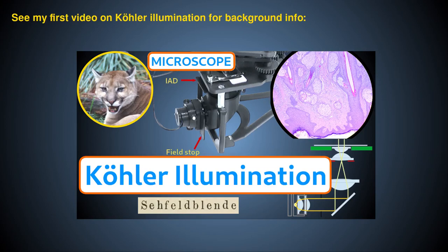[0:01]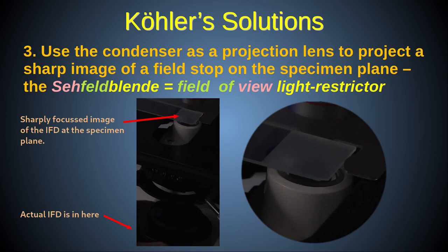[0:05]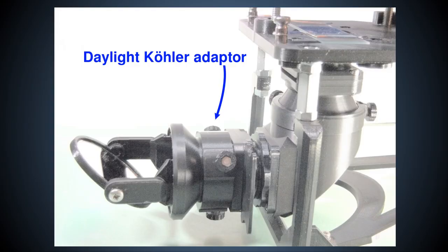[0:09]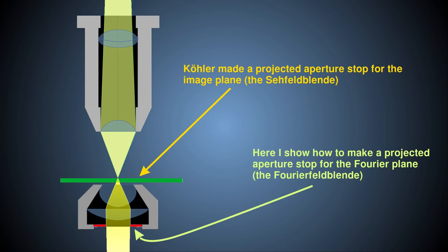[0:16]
In my previous video on Köhler illumination, I described Köhler's methods and his reasons for coming up with them. In this video, I'll show you how you can power the PUMA Köhler illuminator with daylight, and I'll describe an extension to Köhler illumination, which I call the Fourierfeldblende, that enables some advanced aperture shaping techniques.
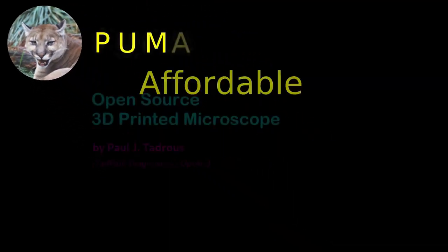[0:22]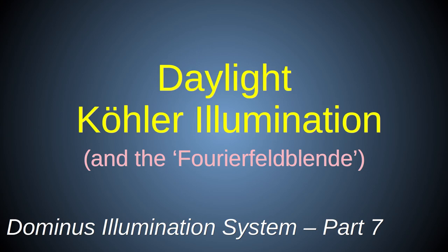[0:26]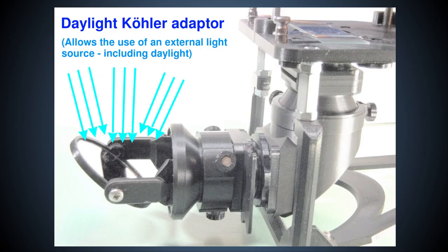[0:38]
Imagine if you could have all the benefits of full Köhler illumination, but without the need for a lamp or a power supply. Well, today I'll show you a new PUMA module that allows just that. But there's more to it. The same attachment can allow the use of any plain wavefront external light source to enhance PUMA's customizability for use in lab experiments, including a logical extension to the Köhler principle for controlling the Fourier aperture of the scope.
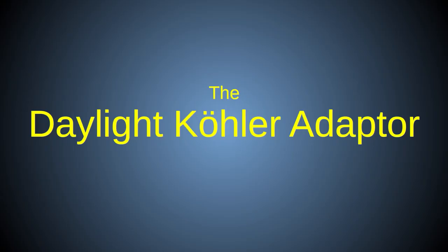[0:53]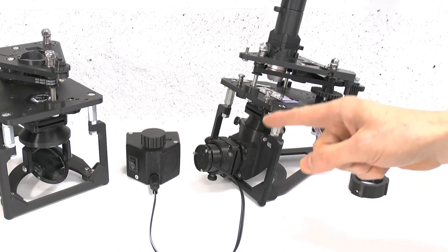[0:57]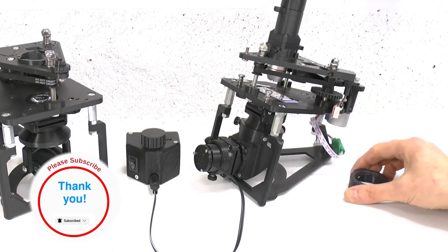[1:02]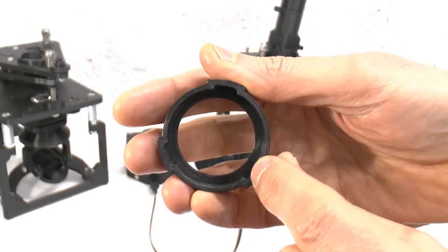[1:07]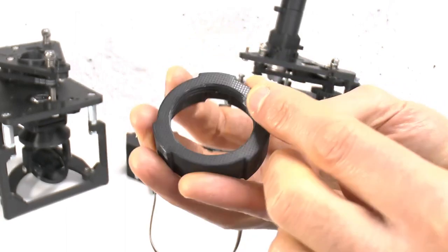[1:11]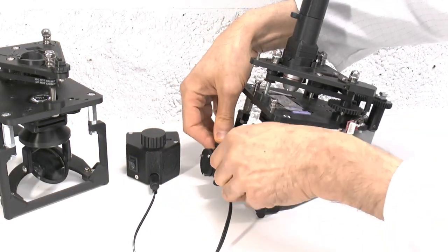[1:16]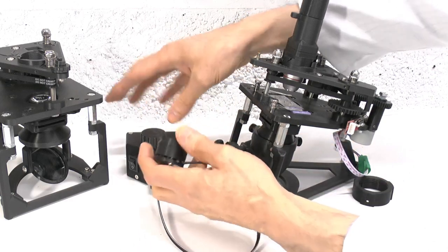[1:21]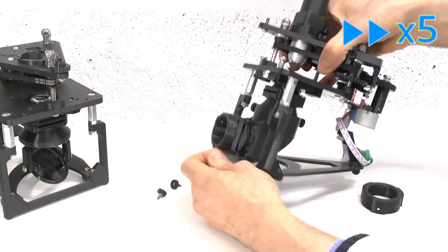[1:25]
If you've already built the PUMA Köhler illuminator, fear not, because everything you've made is still useful. The new part I'm describing today is just this simple small ring, and you can see it has these three cavities at one end and a thread at the other. So, to use this adapter, starting with the full Köhler illuminator, you simply remove the LED lamp and lower collector module together with its adjustment ring by completely removing the three adjustment thumb screws as shown.
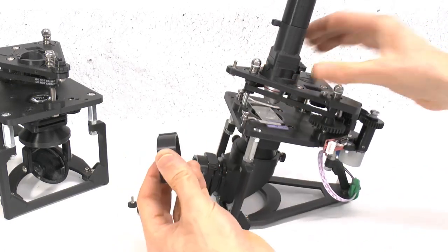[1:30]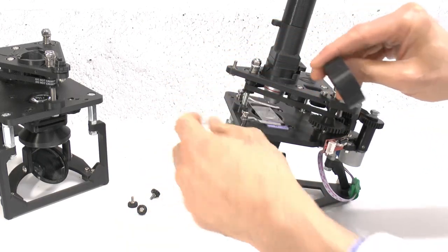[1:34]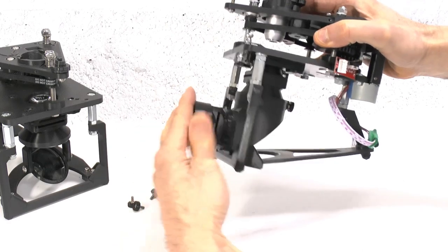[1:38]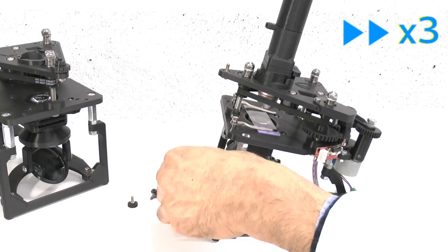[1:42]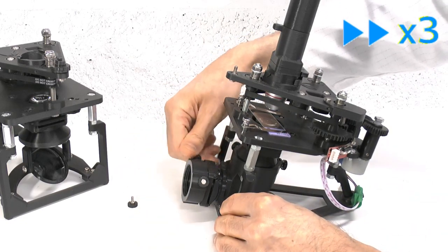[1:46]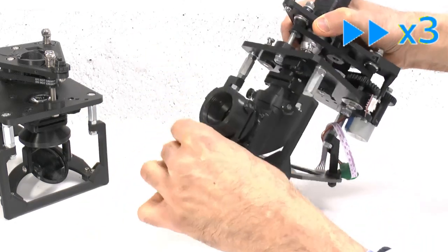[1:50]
Now, slide the daylight adapter into the end of the Köhler illuminator, ensuring the cavities in the adapter line up with the adjustment screw mounts, like so, and fix it in place with the adjustment thumb screws, as shown. You won't be using these thumb screws for making angular adjustments now, they're solely used to hold this adapter in place.
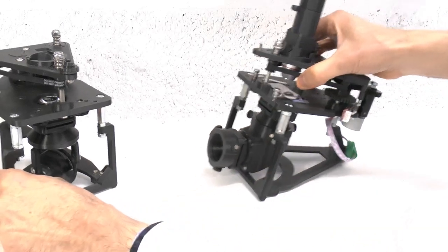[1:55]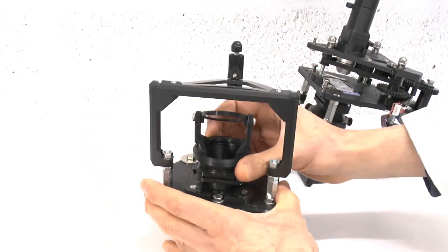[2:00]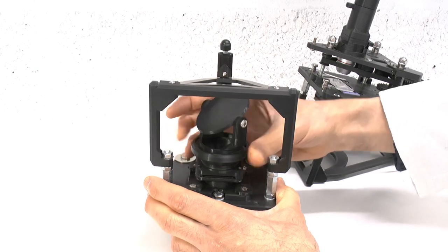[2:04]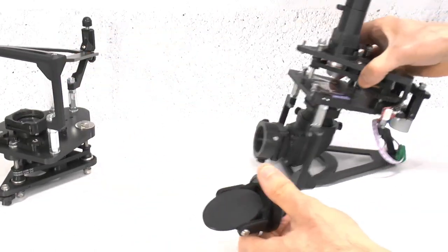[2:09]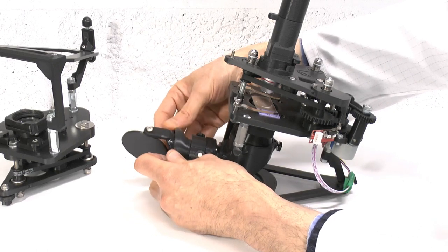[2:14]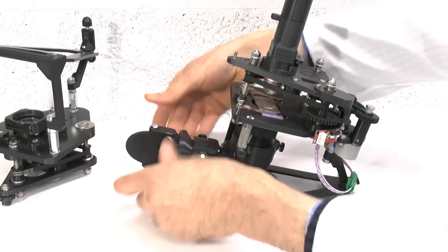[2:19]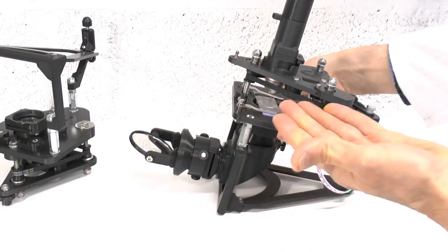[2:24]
Now take the standard PUMA mirror illuminator with its condenser attachment. These modules were described in the video on how to build a foundation scope and in the first condenser video, links to which are in the video description below. You then simply screw the whole mirror assembly into the thread provided by the daylight Köhler adapter, like so. And now you have an adjustable mirror to direct an external source of light into the Köhler illuminator. It's as easy as that. However, not any old light source will be suitable.
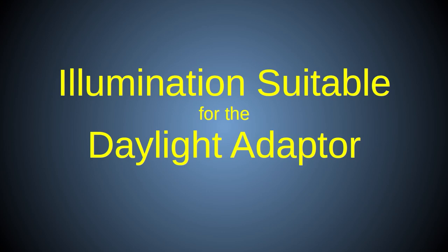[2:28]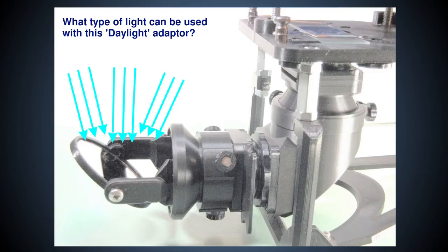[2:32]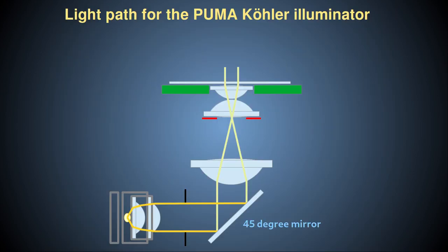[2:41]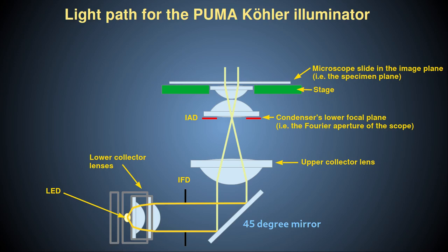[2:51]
So, what type of light source can be used with this adapter? You may think that the clue is in the name. However, it's important to consider the light path of the PUMA Köhler system to understand why you must be careful when selecting the type of external illumination to use, whether it's from natural daylight or an artificial source. The PUMA Köhler illuminator is designed with a split collector lens system, where the lower part of the collector is attached to the lamp and is designed to output an approximately collimated plane wavefront beam. And the upper collector lens is designed to focus that collimated beam on the lower focal plane of the condenser to produce a magnified image of the lamp there.
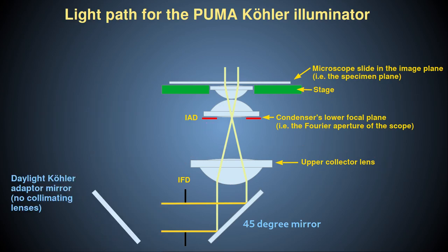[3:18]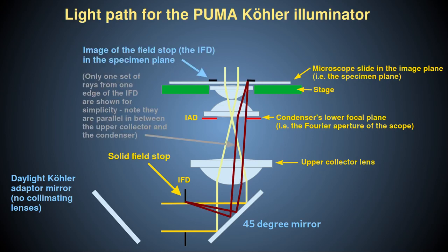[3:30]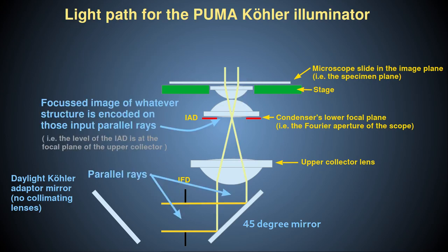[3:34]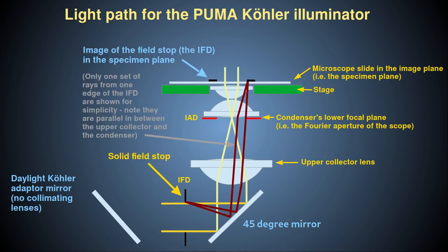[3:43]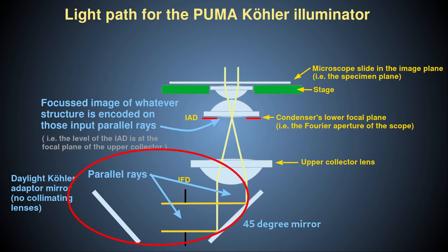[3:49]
With this daylight adapter, you've removed the lower collector lenses with the lamp and replaced them with a mirror. The upper collector is still in place, however. This upper collector does two things. One, together with the condenser lenses, it focuses the image of the field stop onto the specimen plane. And two, on its own, it focuses the incoming parallel rays onto the lower focal plane of the condenser to produce a magnified image of the light source there. The first effect, imaging the field stop, will occur regardless of the nature of the input light. The second effect, however, requires that the input light be collimated and encode an image of an extended light source. This image, when focused by the upper collector lens, will be positioned at and ideally fill the lower focal plane of the condenser for maximum numerical aperture illumination.
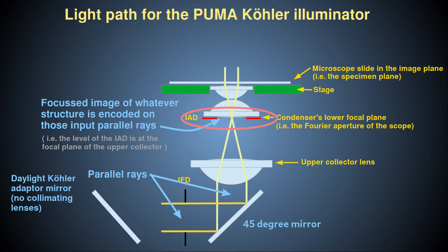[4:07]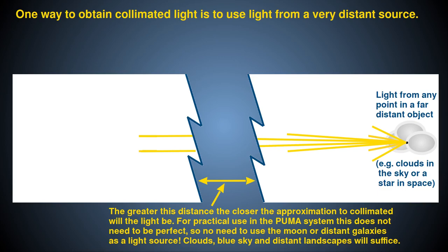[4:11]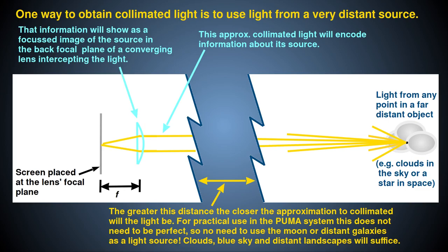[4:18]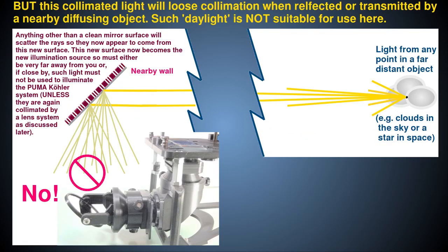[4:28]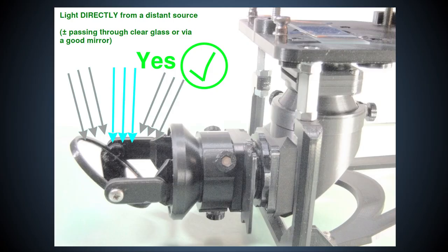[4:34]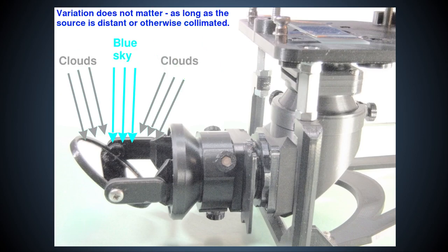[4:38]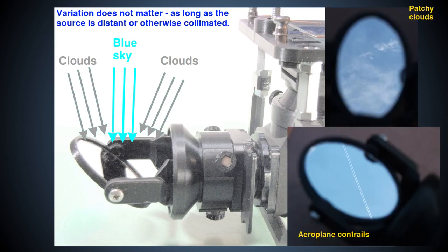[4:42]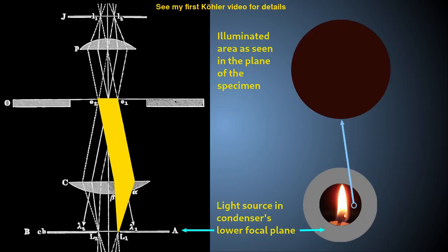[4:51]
So, in practice, when using daylight as the illumination source, this daylight must originate from a faraway source, like the clouds and the blue sky, or light reflecting off a distant landscape, in order for it to be approximately collimated. You can't just use ambient daylight reflecting from any close source, for example within a room reflecting off a white wall, a curtain, or some other close diffusing object. When using natural daylight in the correct way, it doesn't matter for most ordinary uses of the microscope if the light contains some variation in brightness across the field, such as a combination of clouds and blue sky, or the features of some faraway landscape, because the Köhler principle will even out this illumination in the specimen plane.
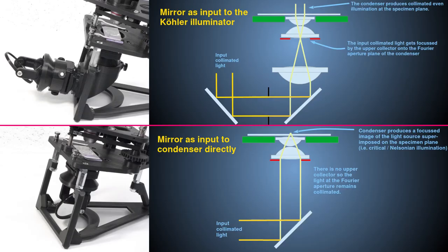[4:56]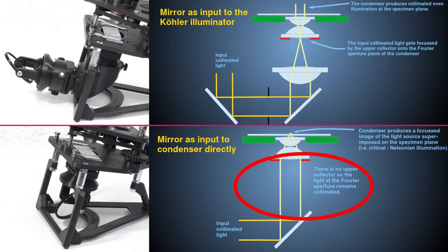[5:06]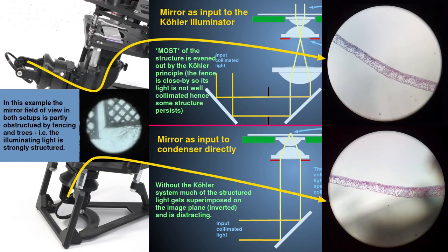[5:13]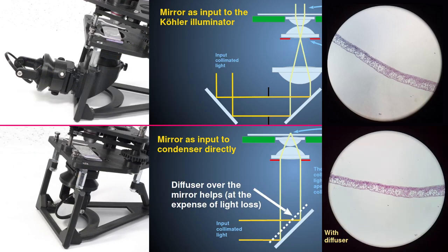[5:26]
This is very different to using the mirror as a direct illuminator to the condenser, because in that situation the collimated rays will not pass through the upper collector but will hit the condenser directly and be focused by the condenser to form an image of the light source near the specimen plane. This can manifest as distracting, uneven illumination, and so in that usage it would be beneficial to use an already uniform light source, such as a full cloudy sky, or a full blue sky, or even use a diffuser over the mirror, or better still, in the lower focal plane of the condenser.
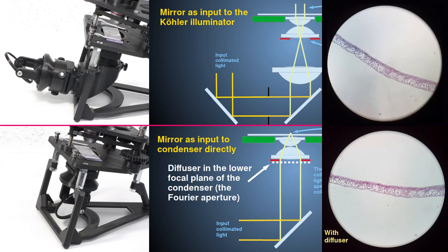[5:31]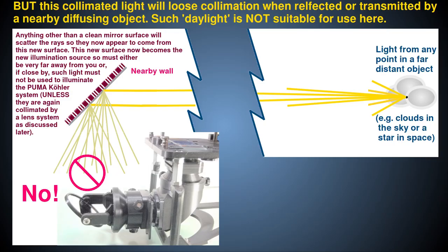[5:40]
However, you must not use a diffuser near the mirror with the daylight Köhler adaptor, because then you will scramble the plane wavefront of any incoming collimated light, and the image of the diffuser surface will lie close to the specimen plane, and so be visible superimposed on the image of the specimen. This is just the kind of distracting artifact that Köhler illumination was designed to eliminate.
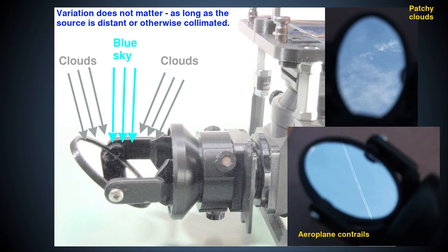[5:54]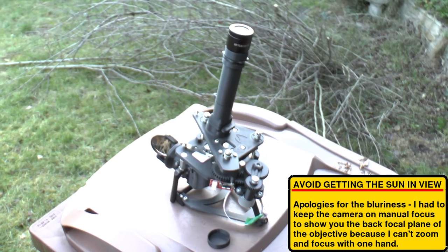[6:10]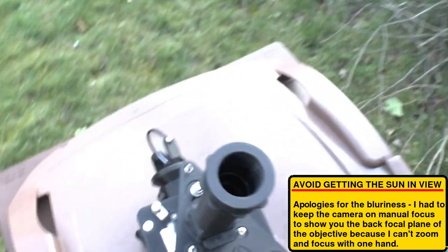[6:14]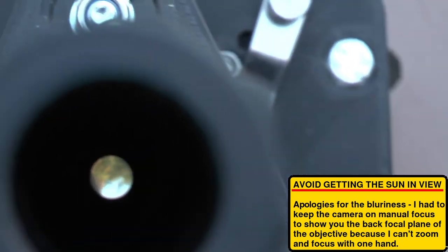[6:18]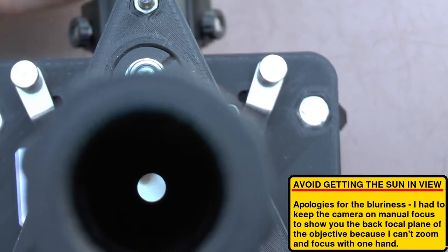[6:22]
Now, I've explained that some variation in the intensity of the daylight used with this daylight adaptor is acceptable. However, you'll want to ensure that all the aperture is illuminated and not blocked off by severe light obstructions, such as trees or buildings or window frames, etc. You can check this is so by simply removing the eyepiece and looking at the back focal plane of the objective. If you see significant obstructions to the pattern of the illuminated disc, then move the scope or the mirror to a less obstructed position.
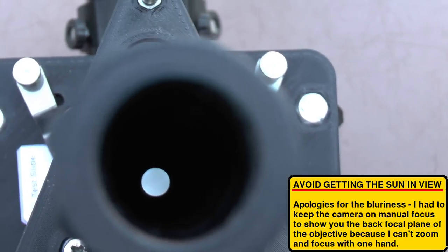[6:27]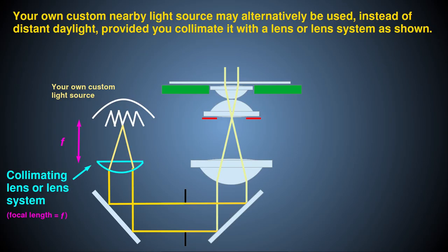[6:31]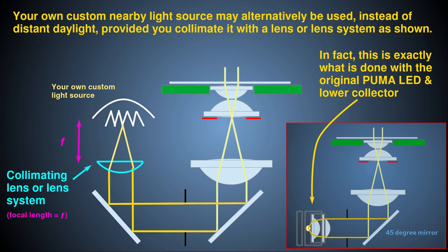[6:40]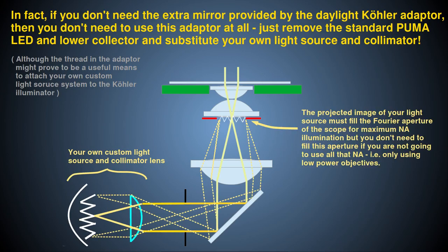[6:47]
Be careful, however, not to get a direct reflection of the sun in the mirror at any time, or this could damage your eyesight. If you want to use an external artificial light source with this new illumination module, then that light must also be effectively collimated and encode an image of an extended luminous surface, that when this image is focused onto the lower focal plane of the condenser, it will fill this plane to allow use of the maximum numerical aperture of illumination provided by the condenser. Although, if you only intend to use low-power objectives, you can relax this criterion.
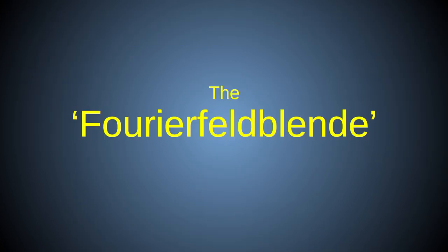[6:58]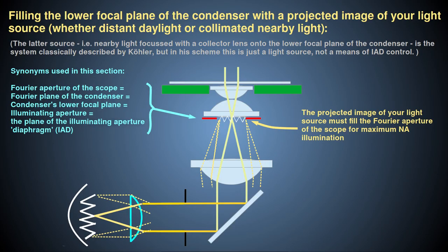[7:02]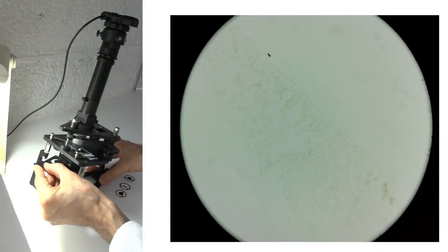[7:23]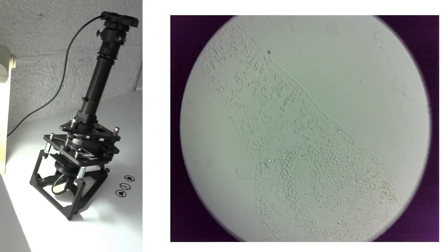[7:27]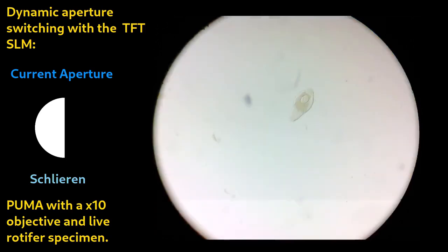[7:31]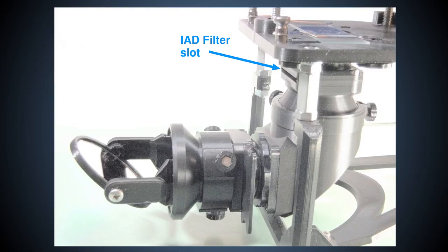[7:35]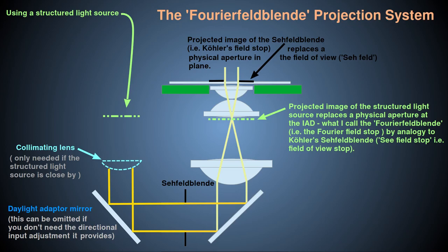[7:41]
The illumination criteria discussed so far are those that are needed for plain full-aperture illumination. However, there may be instances where you do not want the full aperture of the condenser to be illuminated. Some obvious examples are when you want to do Schlieren phase imaging or dark ground microscopy. This daylight module opens up new opportunities on how to achieve this. The standard way to shape the condenser's lower focal plane is with a solid filter or the spatial light modulator, or SLM, in the illuminating aperture diaphragm slot, or IAD slot, and you can still do it that way with this daylight module. However, this daylight module makes it practical to shape the condenser aperture by using structured light encoded in the collimated input beam, without the need for a solid filter in the lower focal plane of the condenser.
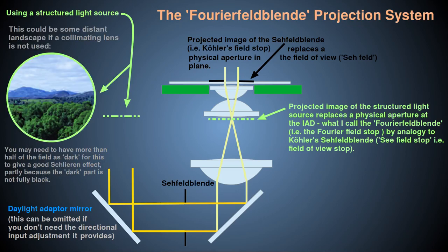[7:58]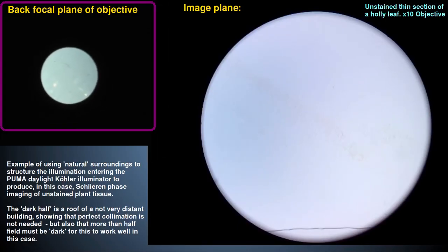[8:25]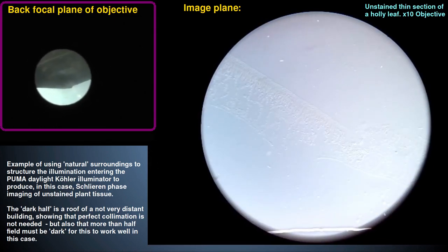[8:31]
This sounds complicated, but it can actually be very easily achieved without additional apparatus. For example, if you're using natural daylight, you can achieve a Schlieren effect by looking for a natural distant horizon between the sky and the ground. You then remove the eyepiece and look down the tube at the back focal plane of the objective and adjust the mirror or microscope position to get the boundary between light and dark positioned so as to fill half the illuminating aperture with light, that is the sky, and the other half with dark, that is the ground, trees, etc. Then, when you replace the eyepiece, you will see a Schlieren effect. This example may be handy if you've forgotten to bring your IAD filters with you out in the field, but it is not otherwise particularly useful.
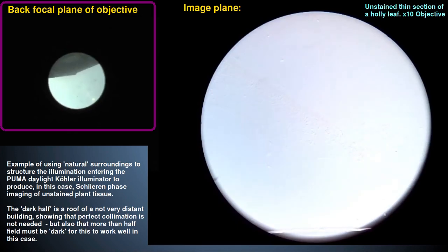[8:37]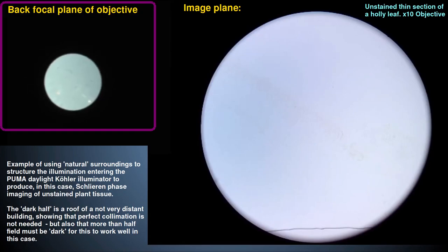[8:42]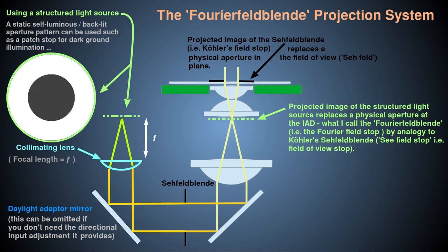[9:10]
The real benefit of this method of shaping the illuminating aperture comes when using an artificial light source in the laboratory. You see, you can set up a system with a structured light source at the focal plane of a converging lens. The converging lens therefore collimates the image of this shaped light source to provide input to the daylight Köhler system, which will then project an image of that structured light source on the condenser's lower focal plane. The structure of that light source will then form the illuminating aperture of the microscope. In simple cases, this can be a patch stop or semi-disc for dark ground or Schlieren effects, respectively.
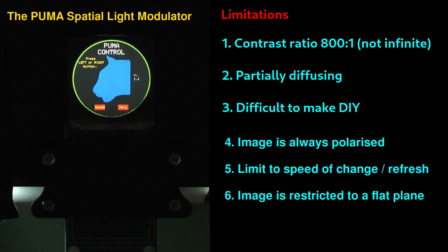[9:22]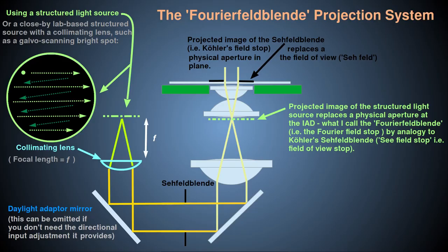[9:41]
But it can also be much more complicated, such as a fast scanning spot for Fourier ptychographic imaging. The PUMA TFT SLM can also allow versatile control of this Fourier aperture, but it has several limitations that were described in the video on the SLM. For example, because the SLM uses a TFT screen, it cuts out a lot of the incident light due to its crossed polarizers, and it always transmits plane polarized light, whereas a light source in this external system using the daylight Köhler adapter will have minimal losses in intensity and does not need to be polarized.
Also, the SLM is partly diffusing, so cannot allow a sharp image of the field stop to be projected, but this external system can make full use of the field stop. Furthermore, you can also use corrective lens elements in this external system to compensate for the non-flat Fourier plane of the condenser, whereas the SLM is restricted to providing its filter all in one flat plane. In short, you have much more flexibility in your choice of equipment used to create the structured light aperture in the Fourier plane with this external system compared to the PUMA SLM.
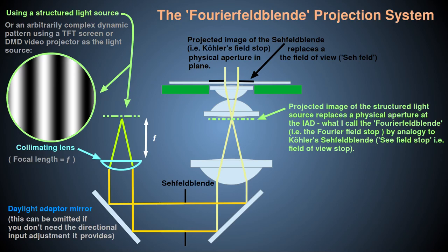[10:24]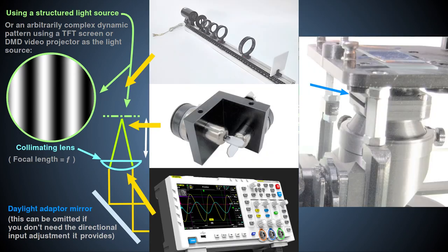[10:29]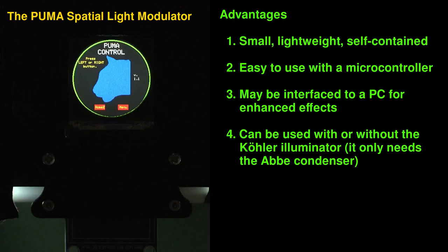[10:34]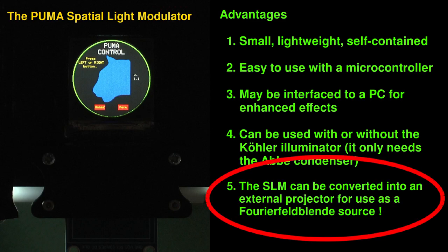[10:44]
The external system can be big and bulky and powerful because it does not have to physically fit into the tiny IAD slot like the PUMA SLM. These advantages are not all one way though. The PUMA SLM is a lot more portable than the external projection system and does not require any additional optics and mechanical components. Finally, the SLM can itself be transformed into a projector by adding a powerful backlight and converging collimating lens, so it can actually be used as an external structured light source for projection. I'll leave details of how to do this for another video.
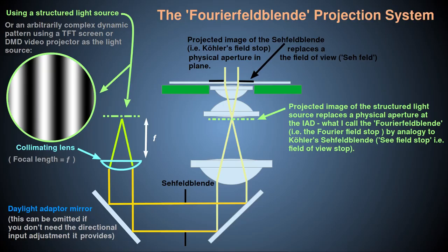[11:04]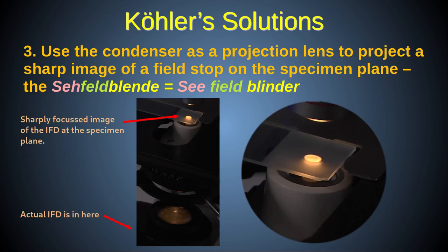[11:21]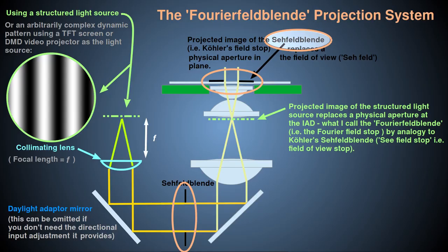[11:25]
Now, when you think about it, this external structured illuminator projection system is a very similar method for control of the condenser's lower focal plane aperture, i.e. the Fourier aperture of the scope, to the projection method Köhler devised to control the image plane aperture. So, just as Köhler called his image plane projected aperture the Sehfeldblende, so we could call this optical projection system for defining the condenser's Fourier plane illumination aperture a Fourierfeldblende.
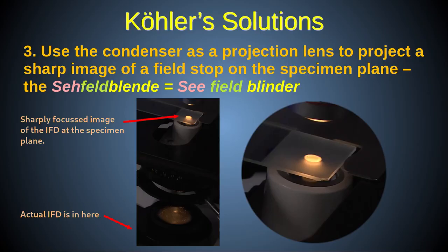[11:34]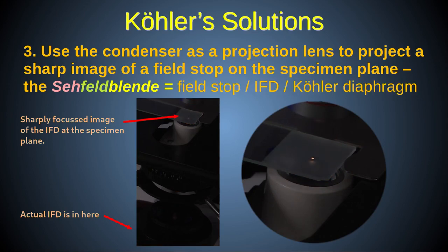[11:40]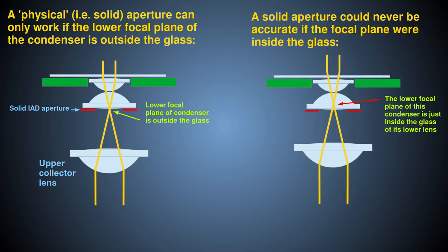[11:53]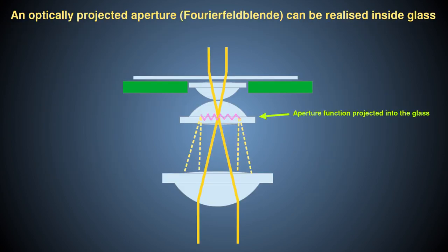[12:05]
Also, just as Köhler made his projected aperture so that he could put it inside the solid glass slide to be coplanar with the specimen, so also this Fourierfeldblende can be projected into the glass of the condenser lens. This may be required because with some configurations of the condenser, I have found that the optimal lower focal plane can be just inside the glass of the lower condenser lens. No physical stop can be optimized for that, but this external projected aperture can be placed even inside solid glass if required. This is done by varying the distance between the upper collector and the lower lens of the condenser using the spacer ring mechanism described in my first Köhler video.
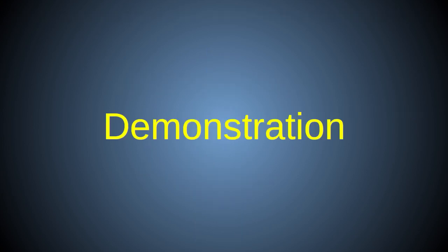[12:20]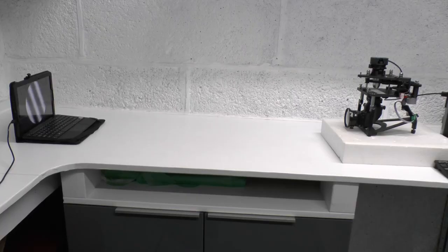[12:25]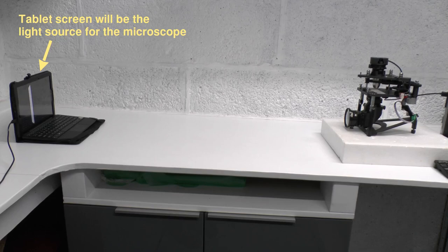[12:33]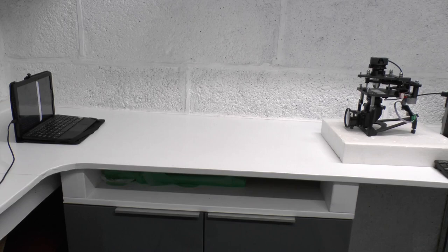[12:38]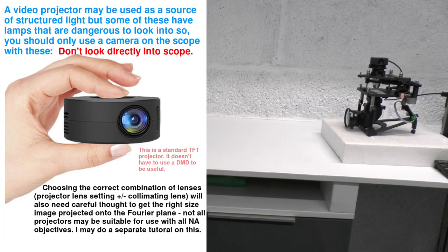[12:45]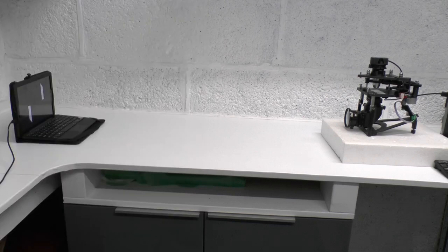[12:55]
To demonstrate this external structured aperture projection system, I've set up this simple apparatus. Here, the light source is the screen of this tablet computer, and you can see some aperture functions displayed on it. This level of illumination is sufficient for this demo, but more powerful light sources would be used in practice, like a DMD video projector. However, you should not look down the microscope by eye if using a video projector, because some of the light sources they use can be damaging to your eyesight, so only use cameras with those.
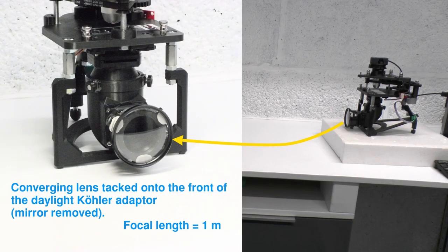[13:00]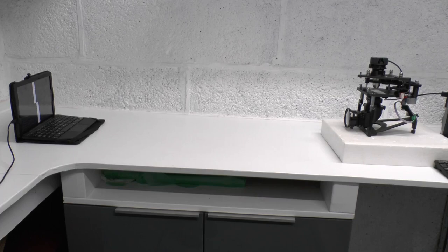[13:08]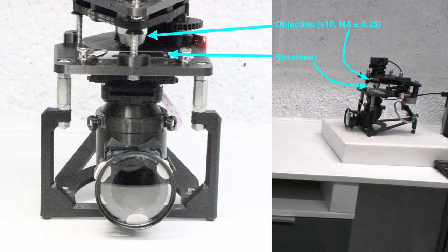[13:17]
I've removed the mirror from the daylight Köhler attachment and stuck a collimating lens on the front of it with blue tack. This lens has a focal length of 1 meter. So the tablet screen is placed exactly 1 meter away, so that its light is collimated as it enters the scope. I have a slide on the stage with a specimen that is a thin section of an unstained holly leaf, so most of any contrast seen will be of the phase or scattering type, rather than absorbance contrast.
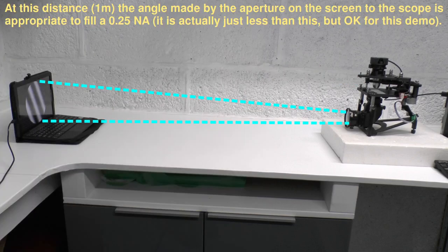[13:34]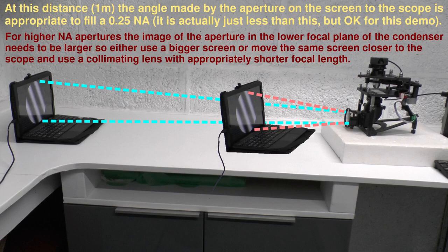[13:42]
The objective is a ×10 objective with a numerical aperture of 0.25, and I chose the collimating lens and its focal length such that the projected image of this tablet screen just fills the numerical aperture of this objective. If I were using a higher numerical aperture objective, I would need to bring the tablet closer to get a bigger image of its screen, and so I would also need to reduce the focal length of the collimating lens accordingly.
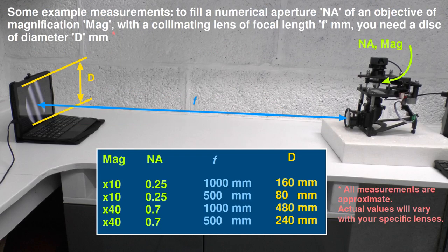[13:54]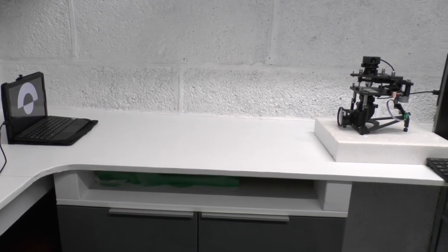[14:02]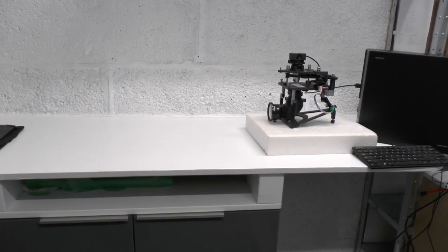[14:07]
Bear that calculation in mind if you want to try this experiment at home with a smaller screen like your smartphone or a bigger desktop monitor. On top, we have an AF51 camera with a direct coupling to the objective. The camera is focused on the back focal plane of the objective. I'll show you how to do that in a separate tutorial.
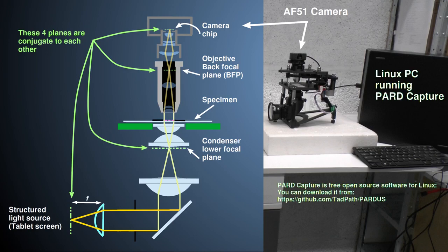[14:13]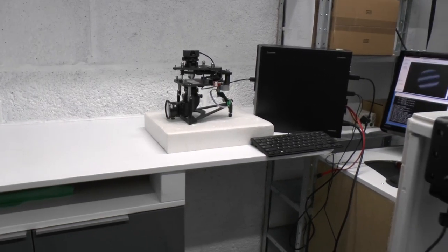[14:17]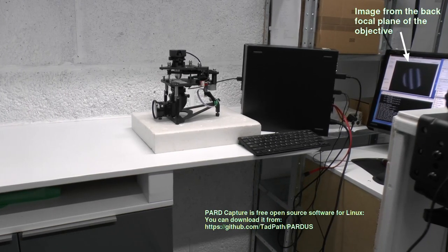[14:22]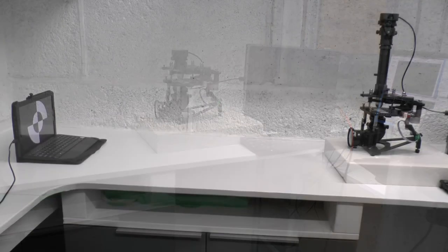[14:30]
The camera is connected to this PC, which is recording the image, and you can see how the image in the back focal plane of the objective effectively mirrors that of the input structured light aperture. We also want to see what the image of the specimen looks like with these apertures, so for a separate run of the experiment, I set up the camera on top of an eyepiece with the full optical tube in place. During the actual experiments, I turn out the room lights to avoid unnecessary light contamination from the environment.
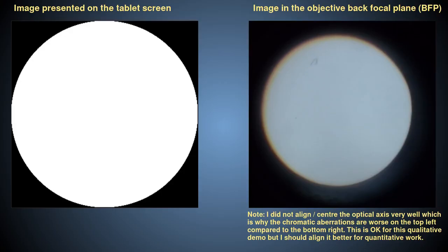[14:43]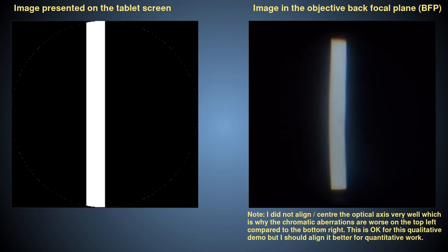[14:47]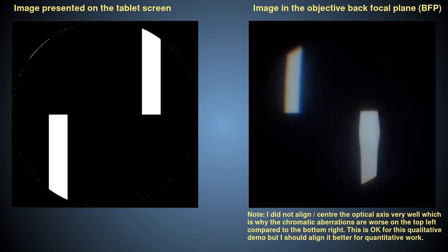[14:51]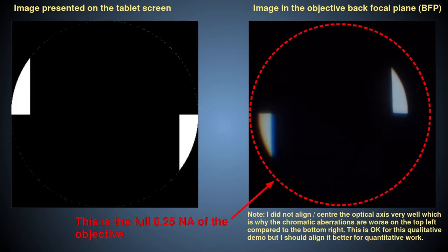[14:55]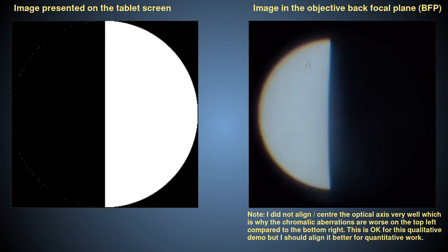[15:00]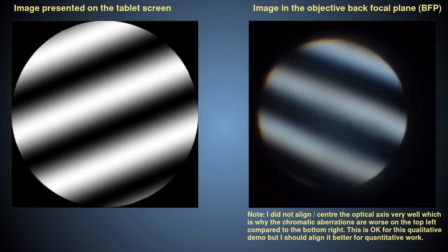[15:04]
So, to the results, and here you can see on the left the bitmaps used as the external apertures, and on the right, the corresponding images seen in the back focal plane of the objective. The projection doesn't quite fill the aperture, but it's close enough for this demo. Note the optical distortions and chromatic aberrations caused by the cheap molded glass lenses of the PUMA Abbe condenser. But despite this, you can see that the image is still good enough for intricately shaped apertures to be formed.
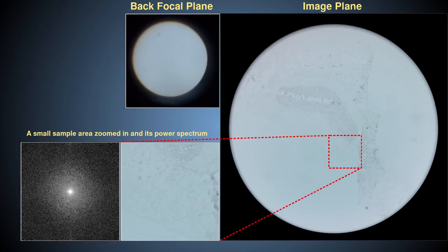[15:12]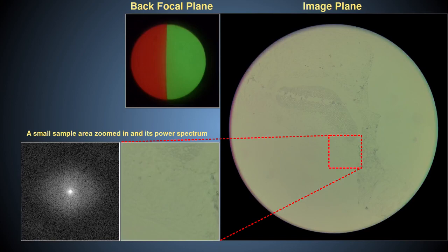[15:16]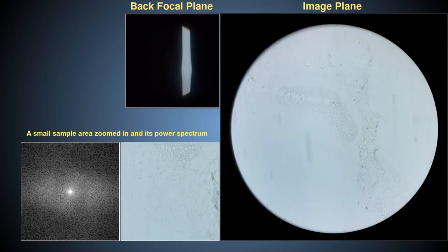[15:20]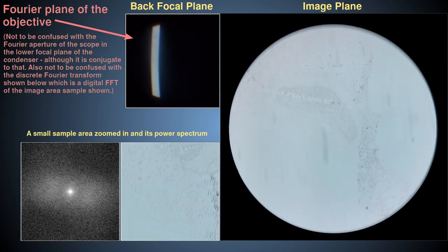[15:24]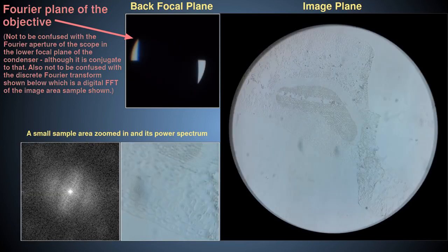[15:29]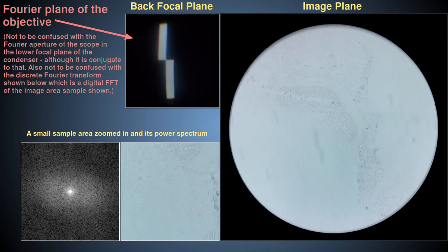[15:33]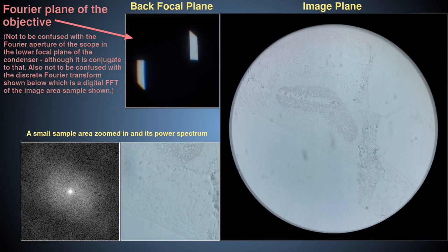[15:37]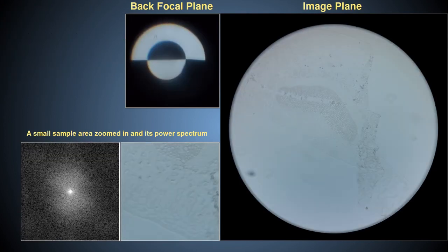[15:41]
Now, this time on the left we see the image of the back focal plane of the objective, and on the right, the corresponding image seen looking down the eyepiece. In other words, we have the Fourier plane on the left and the image plane on the right. Note that, in general, what you see in the Fourier plane of a microscope is not a simple single Fourier transform of the specimen image. It's more complex than that, but a fuller explanation will need to wait for a future tutorial. Just a couple of points I want to make at this stage.
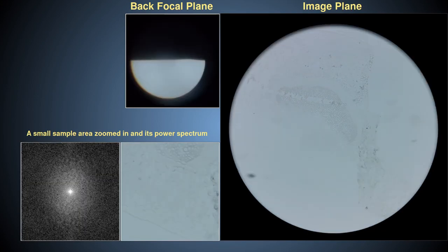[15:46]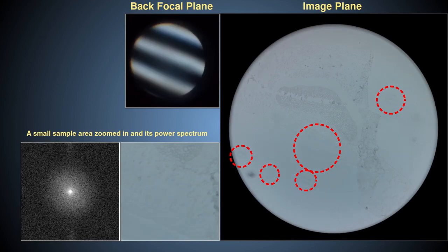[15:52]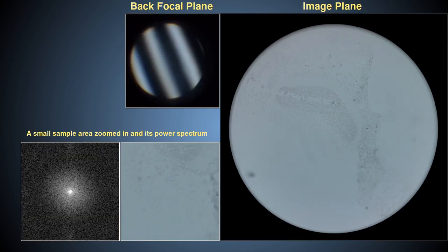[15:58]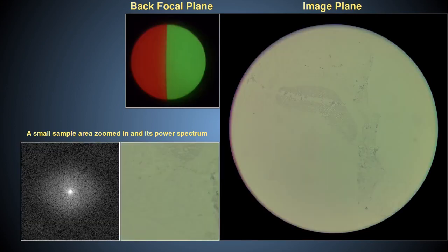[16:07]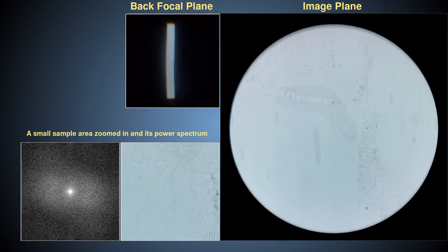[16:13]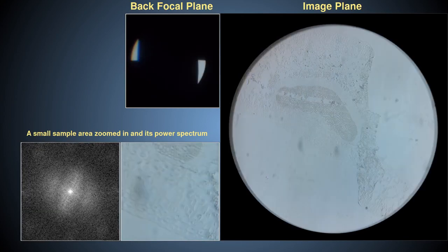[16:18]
First, note how specks of dust on lenses at different focal planes can cause an image of the Fourier aperture of the scope to be produced at multiple points on the image plane. Apart from that, note how the overall background illumination of each image is remarkably flat, despite the illuminating aperture being highly contrasted structured light. This tells you that despite using cheap molded lenses, the PUMA Abbe condenser and Köhler system are remarkably effective at allowing structured illumination microscopy experiments, at a tiny fraction of the cost compared to commercial microscopes more commonly used for this purpose. So, you can do these experiments yourself at home, without needing huge research grant funding.
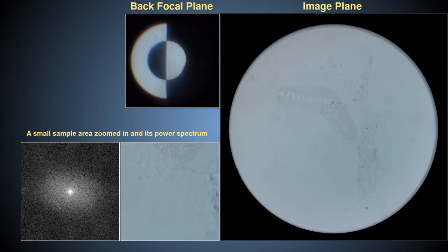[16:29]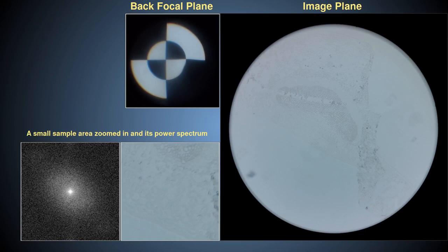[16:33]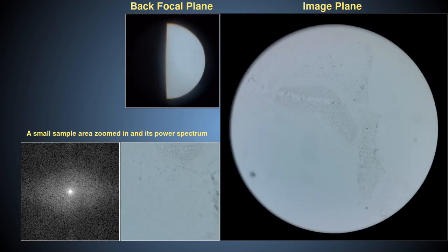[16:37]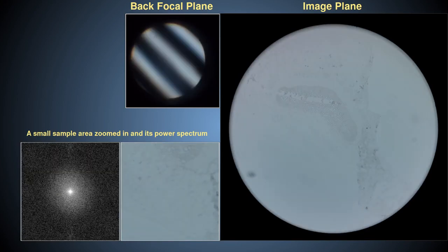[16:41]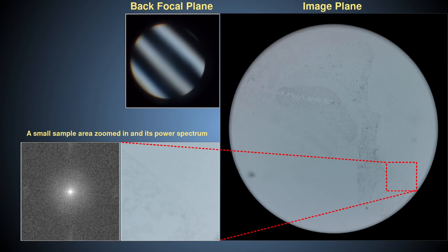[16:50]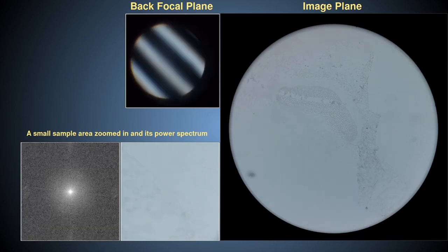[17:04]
Also note the interesting changes in contrast seen with each aperture. I want to emphasize that the specimen focus does not change throughout this experiment, even though some images look blurred. What you're seeing are the effects of selectively attenuating or enhancing certain spatial frequencies due to the effects of the structured illumination in the Fourier aperture of the scope. Look here, for example. This is a sinusoidal aperture function, and it almost obliterates this edge feature. But if we simply rotate the same aperture by 180 degrees, the same feature suddenly becomes super enhanced. We are using the same sinusoidal frequency, but effectively we've just changed its phase, and the effect is dramatic.
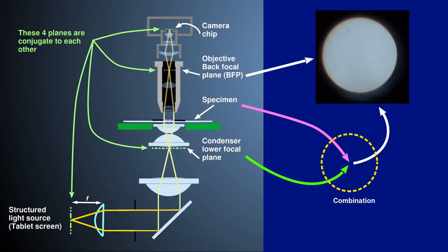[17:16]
Now, before I leave this demo, there is one more thing I want to show you. Remember that these aperture images are those seen in the back focal plane of the objective, which is a conjugate plane of the Fourier aperture of the condenser. The difference between the light in those two planes, apart from aberrations introduced by the condenser, is that the light has to pass through the specimen before it gets to the back focal plane of the objective. So, the image you see in the back focal plane is a kind of compound image that carries with it both the intensity distribution of the structured illumination and diffraction information that depends on the structure of the specimen.
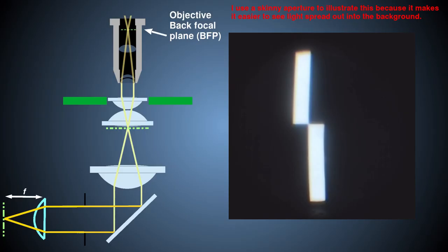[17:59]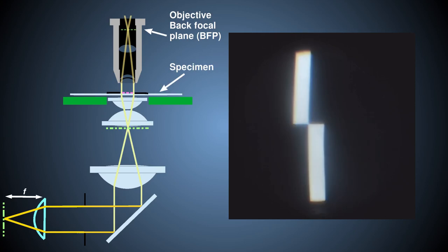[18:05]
The visual effects of specimen diffraction in the back focal plane can be hard to see because the illuminating aperture signal component is actually much stronger. Here are before and after images of the back focal plane of the objective. Before means there is no slide on the stage, and after means that the specimen is on the stage.
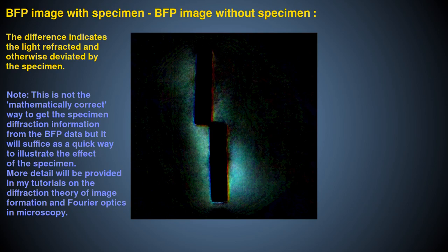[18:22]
See how the light appears more scattered, more misty, with the specimen present. That mist carries important structural information about the specimen. Here is a subtraction image where the image of the back focal plane without the slide was subtracted from the image of the back focal plane with the specimen in place. The contrast of the subtraction has been enhanced to show the features better.
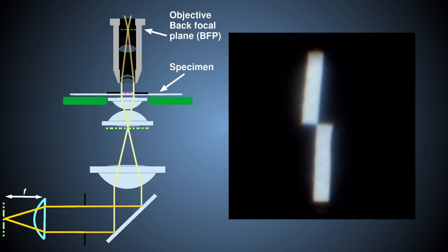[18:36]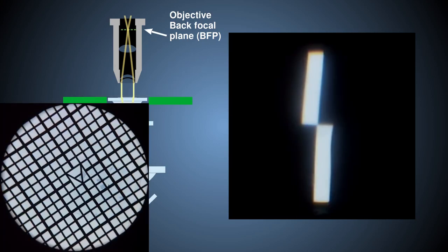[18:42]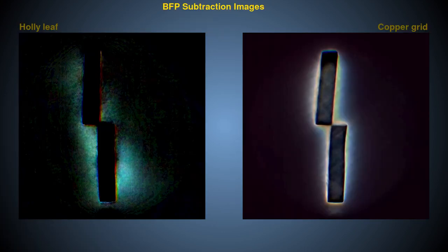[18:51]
Now, here is the same aperture function, but this time I have a strongly absorbing specimen on the stage. The specimen is that of an EM copper grid mounted on a slide with some ultra-thin sections on it embedded in epoxy, which is this translucent stuff. Now compare the two enhanced subtraction images.
On the left is the image using the unstained holly leaf specimen, and on the right, the image using the EM grid specimen. The difference is striking and is due to differential diffraction at the specimen prior to light entering the objective. For now, I'll just leave these images for you to consider. I'll need to explain a lot more about the diffraction theory of image formation in microscopy, Fourier transforms, and convolutions before I can discuss these things in more meaningful detail. So that will have to wait for future tutorials.
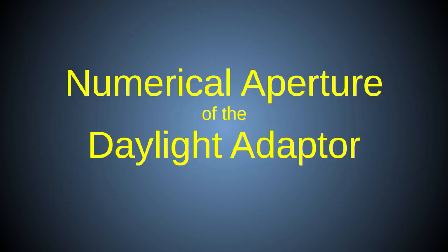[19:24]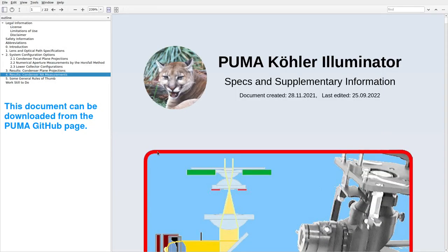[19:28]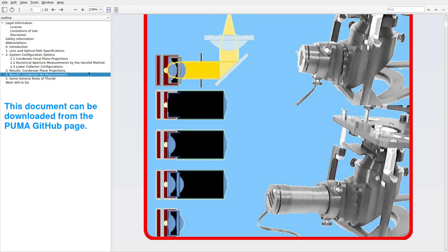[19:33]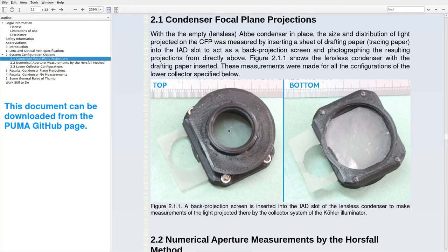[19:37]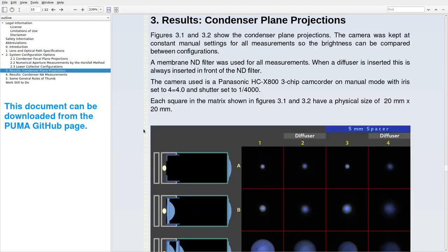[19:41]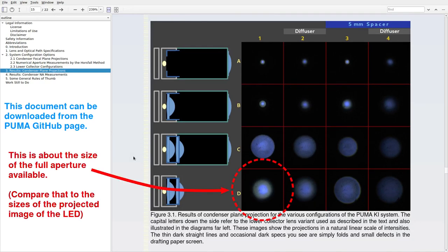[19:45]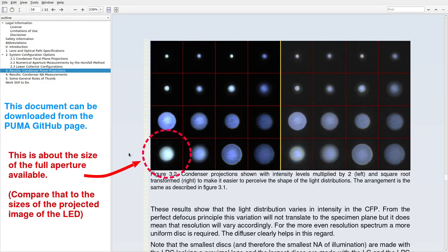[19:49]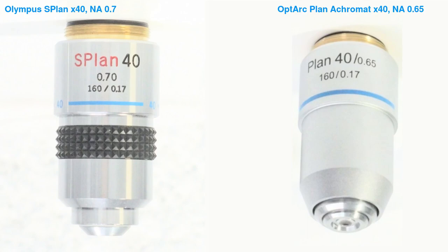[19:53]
One of the limitations of the standard PUMA LED-based Köhler illuminator is that it does not magnify the image of the LED enough to fill the lower focal plane of the condenser. This means it does not use the full numerical aperture potential of the Abbe condenser. The maximum numerical aperture achievable with the standard LED system is 0.76, which is still good enough to fill the aperture of most high-power dry objectives like these.
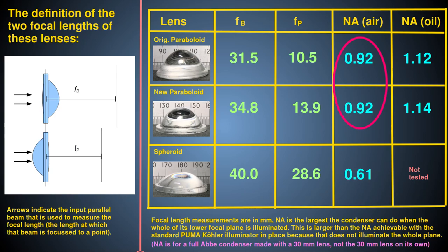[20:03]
But while it can provide illumination to even higher power immersion objectives, it will not illuminate them to their full resolution potential. The condenser itself, without the standard LED-based Köhler system, has a maximum numerical aperture of 0.92 dry and 1.1 oiled, which is good for most ×100 objectives, including immersion optics.
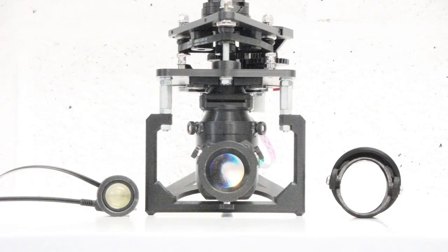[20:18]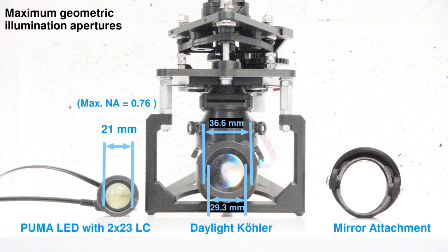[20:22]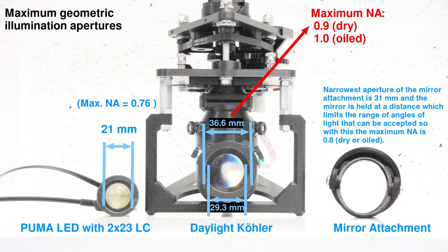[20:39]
The daylight Köhler illuminator has a larger physical aperture than the LED illuminator, so it allows more of the available numerical aperture of the condenser to be used. With full unobstructed illumination, it can provide a numerical aperture of 0.9 dry and 1.0 oiled. This is reduced to about 0.8, whether dry or oiled, if the standard mirror attachment is used, because the mirror itself limits the aperture somewhat. But of course, using this mirror is optional.
For even higher numerical apertures, the special PUMA High Numerical Aperture Illuminator module must be used, which does not use the Köhler illuminator at all, and a separate tutorial will cover that module.
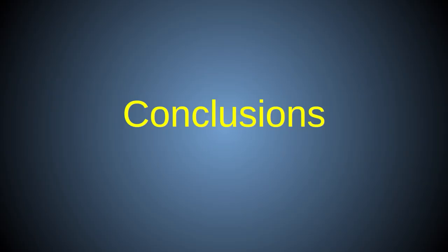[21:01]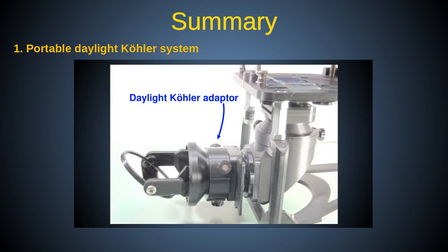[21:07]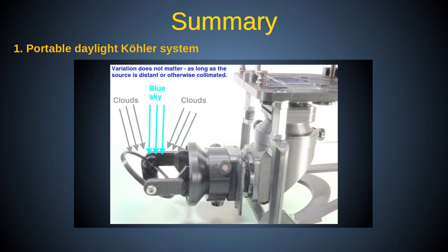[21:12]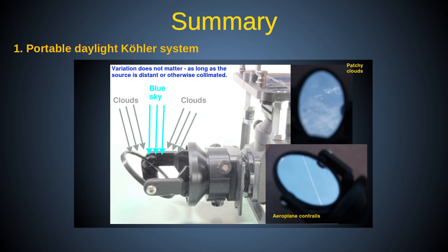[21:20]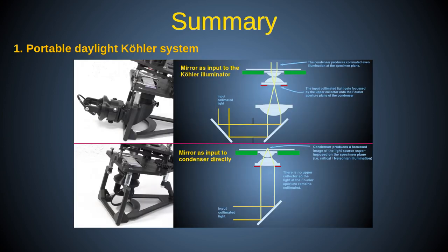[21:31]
So, in summary, the daylight adapter allows PUMA's pre-existing mounted mirror module to be used to direct an independent collimated external light source into the PUMA Köhler illuminator. This allows use of natural daylight for full Köhler illumination, enhancing PUMA's use as a truly portable microscope for fieldwork with ultra-low power requirements. In fact, I don't know of any other microscope that was designed to allow full Köhler illumination driven by daylight. So, if you've come across such a thing, please post details in the comments so we can all learn whether or not this is truly a first.
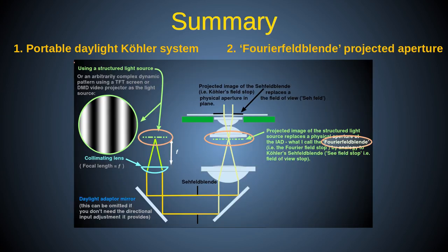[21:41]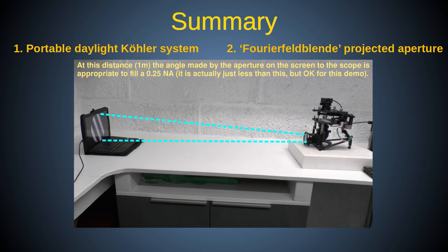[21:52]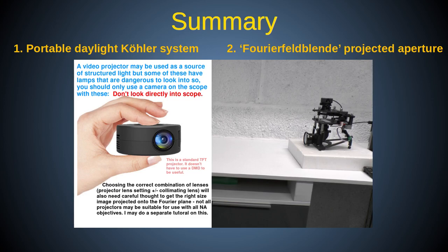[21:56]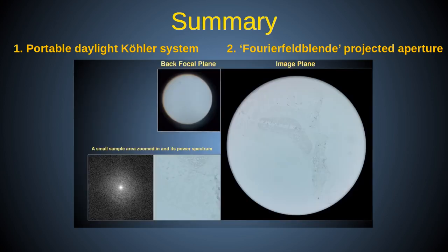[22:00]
The daylight adaptor also allows custom aperture shaping equipment to be used for manipulation of the scope's Fourier illuminating aperture to permit advanced lab-based microscopy imaging experiments with PUMA. Now, to be clear, I didn't just invent the method of projecting structured light onto the condenser's lower focal plane. It's been done before, but I'm showing you how you can do it with PUMA.
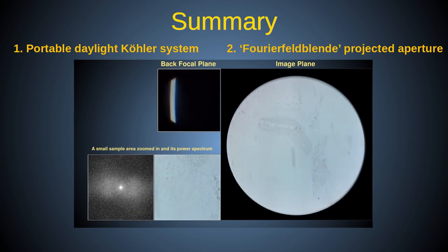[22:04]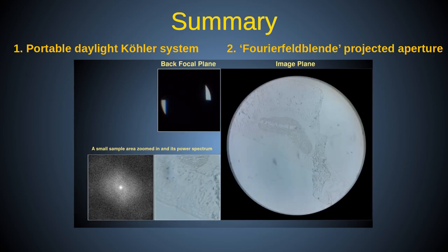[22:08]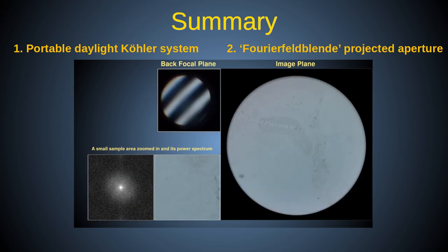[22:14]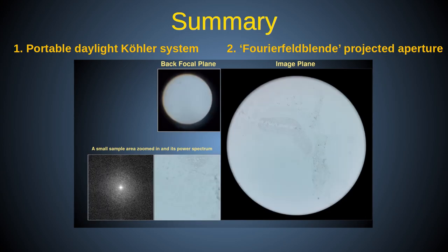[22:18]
I did, however, invent the word Fourierfeldblende, and as far as I know, I've not seen anyone explain such projected structured illumination in terms of a logical extension of Köhler's illumination methods, as I've done here. So, if you know of any prior publication that does this, please let us know in the comments.